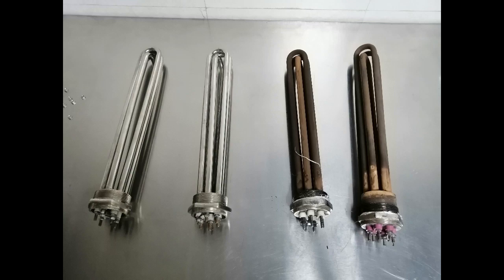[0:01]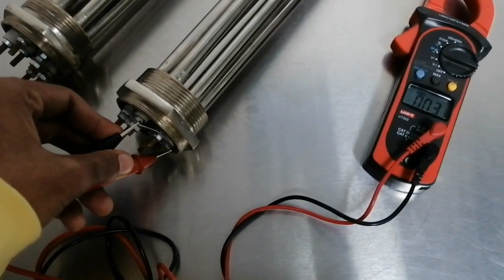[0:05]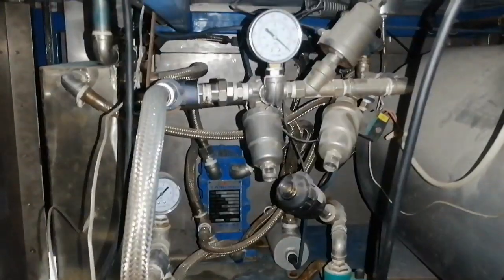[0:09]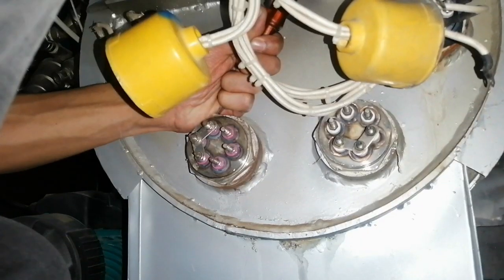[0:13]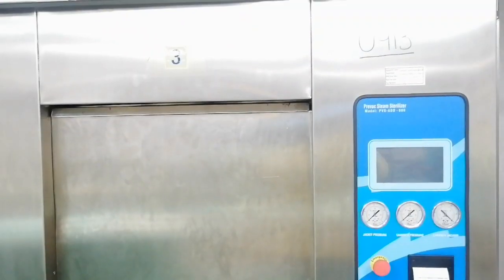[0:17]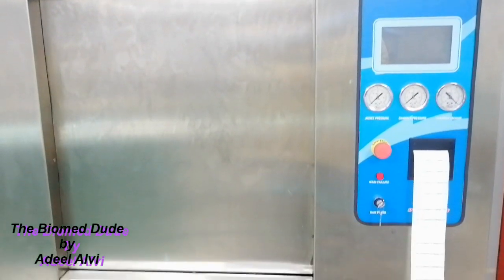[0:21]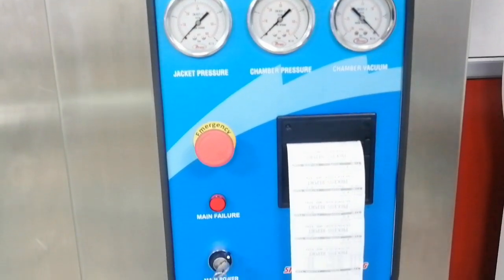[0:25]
Today we are discussing the steam sterilizer and its parts. In this video, I will explain how to replace a steam sterilizer's elements and other parts.
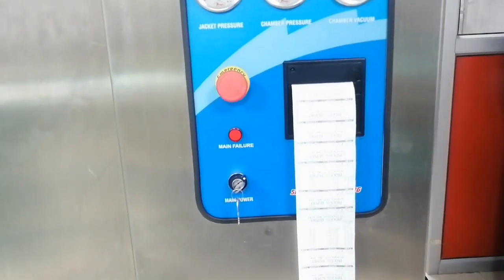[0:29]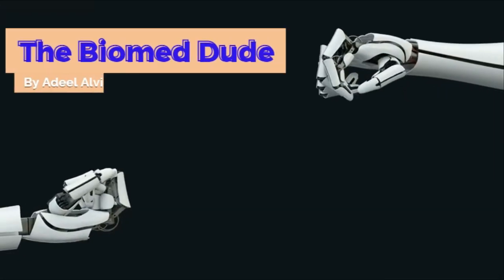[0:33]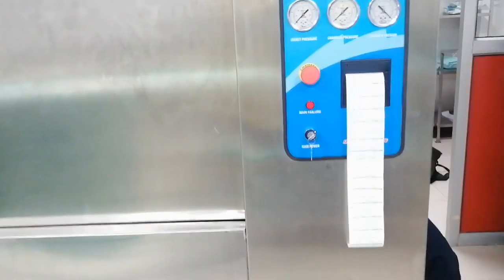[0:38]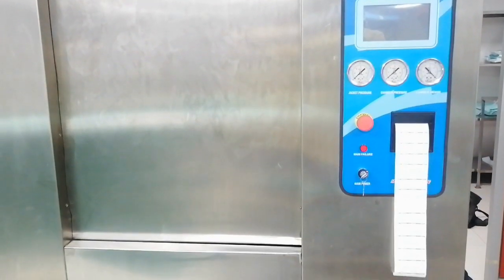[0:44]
So let's dive in. Here is the front view of the steam sterilizer, where the main screen and the bar indicators are displayed, and the printer paper as well.
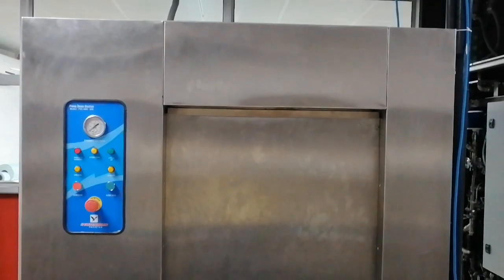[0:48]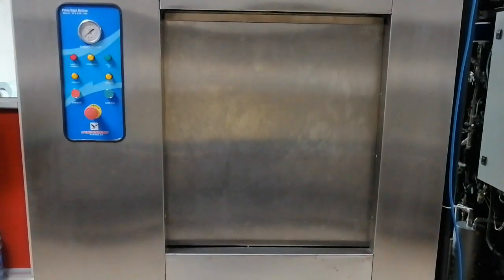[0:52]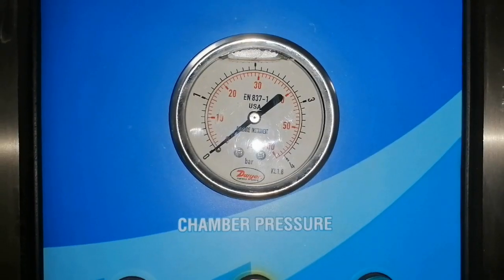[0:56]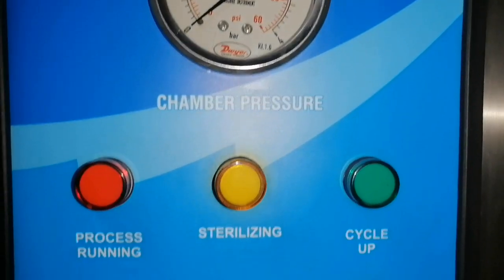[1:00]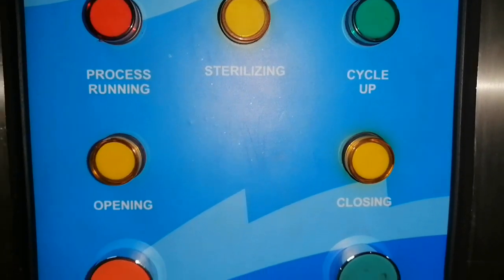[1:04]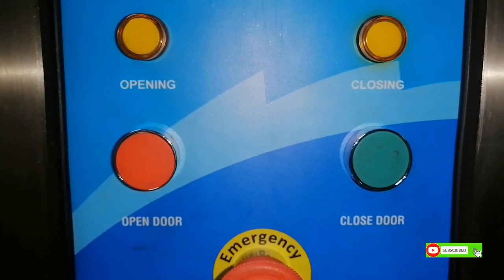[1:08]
On the back side, here is the automatic door, and the chamber pressure and other parameters are displayed on this screen. Here is the chamber pressure, which shows the bar of the internal chamber. Here is the process running indicator, sterilization indicator, cycle up indication, opening and closing door indications, and open door and close door buttons.
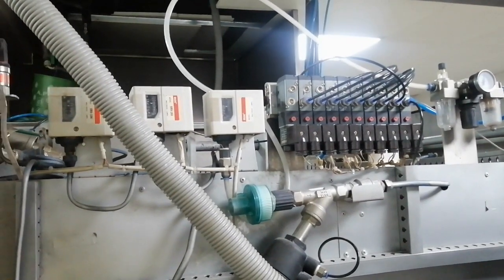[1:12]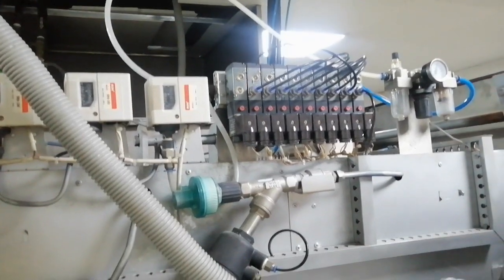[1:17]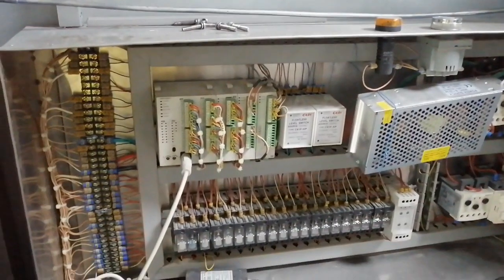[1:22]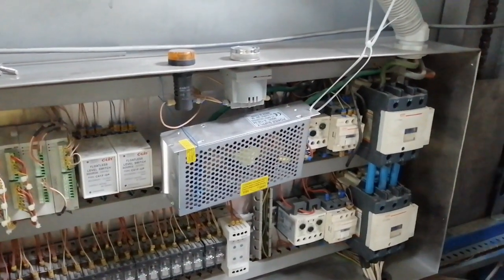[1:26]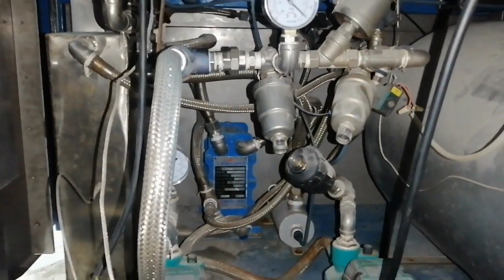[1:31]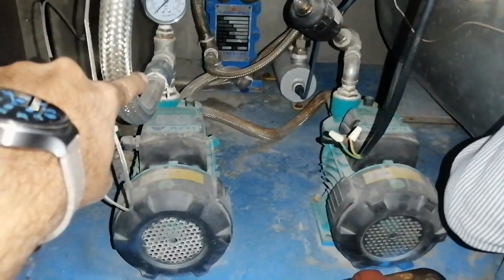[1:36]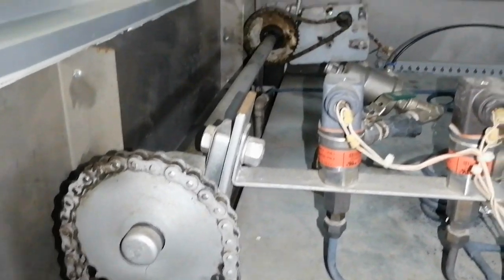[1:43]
So here is the internal structure of the steam sterilizer, where different pneumatic switches, control switches, and safety switches are displayed. Here is the whole PLC system, relay system, power supplies, and other power switches as well. On the bottom side, here are the feeding pumps, pressure gauges, and safety valves to provide the chamber steam and water supply as well. Here is the door opening mechanism, which is operated by dual motors.
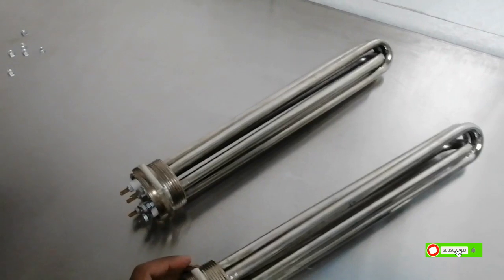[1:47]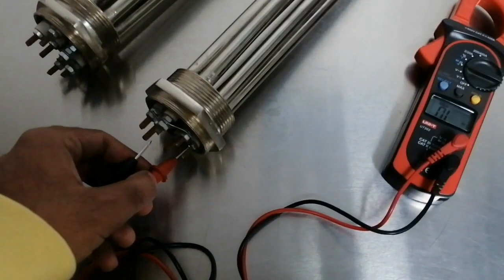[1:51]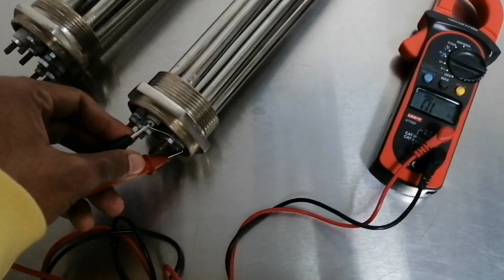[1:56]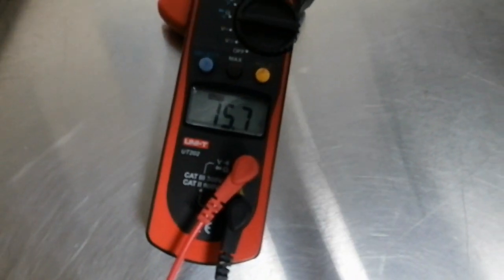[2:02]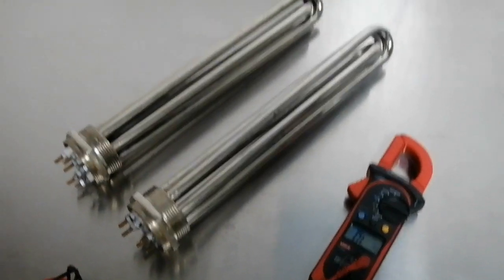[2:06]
So guys, here is the new element which we need to replace the faulty element with. Let's check it. I have a multimeter, and the resistance of the element is properly 15 or 10 ohms. The element resistance should be 15 or 10 and 13 ohms. So it's in working condition. Let's replace it.
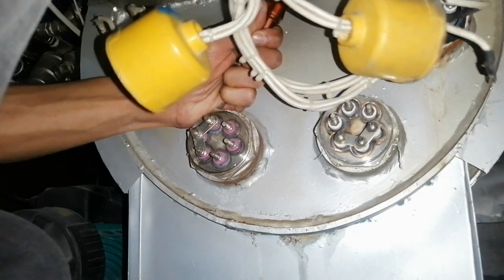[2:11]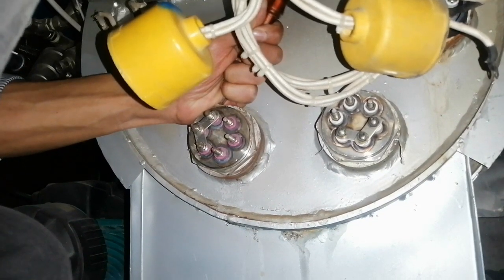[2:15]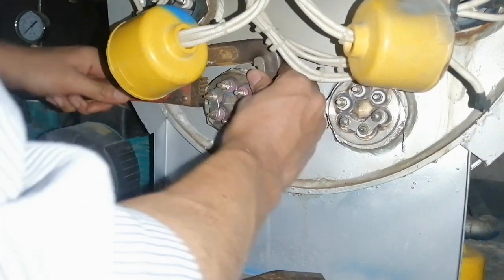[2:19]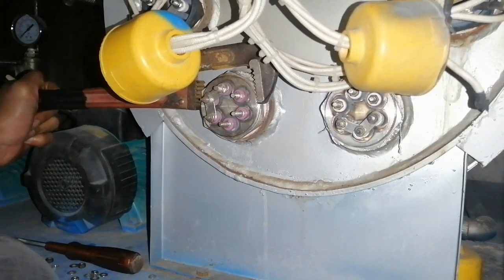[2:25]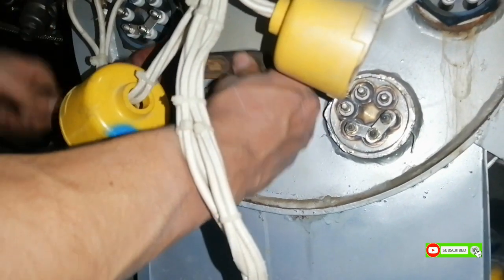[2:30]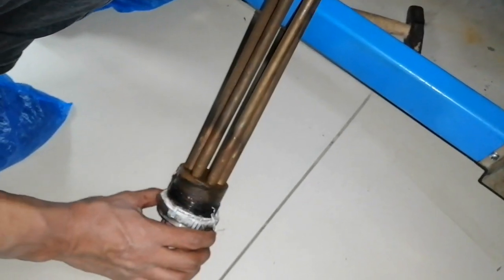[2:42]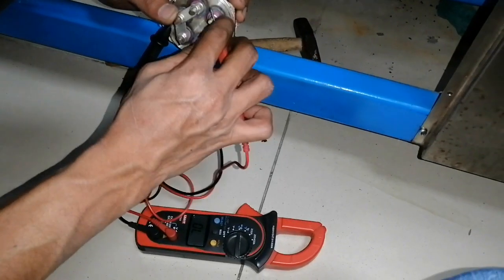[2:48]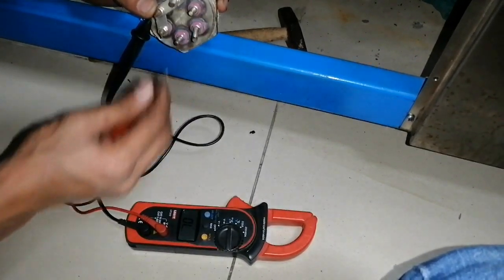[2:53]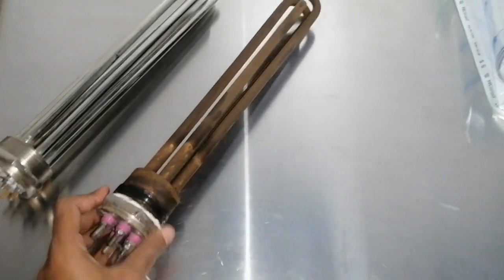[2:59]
I use this pipe wrench to open the faulty elements. So guys, here is the faulty element. I'm just checking the element resistance first, then we replace it to confirm whether this element is faulty or not. From the multimeter, I'm checking the beep and the sound of the resistance. So two sides are open and one side is closed. So here is the faulty element which needs to be replaced.
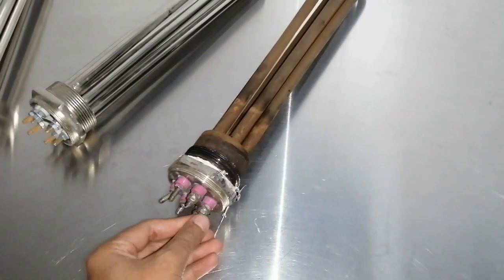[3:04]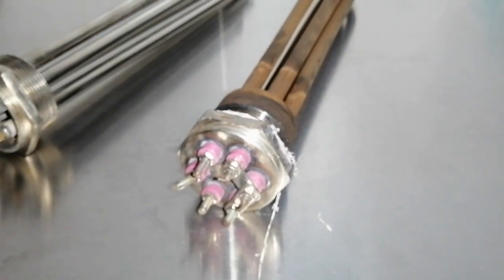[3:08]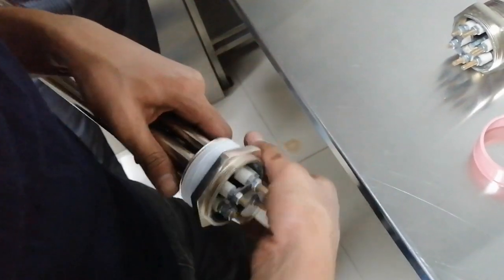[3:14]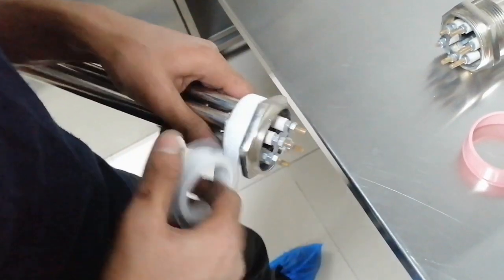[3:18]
This element assembly has three elements. I connect this. This is the procedure to replace the element. So guys, this is thread seal tape, also known as Teflon tape or plumbing tape. It's used in plumbing for sealing pipe threads and to prevent leakage.